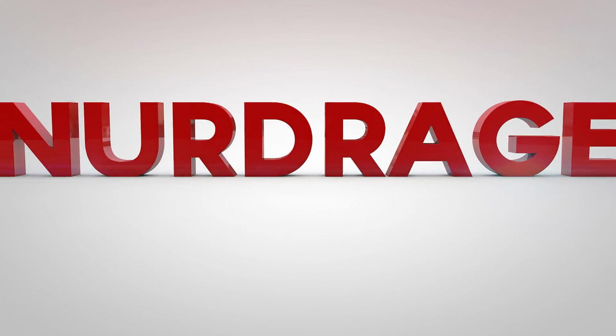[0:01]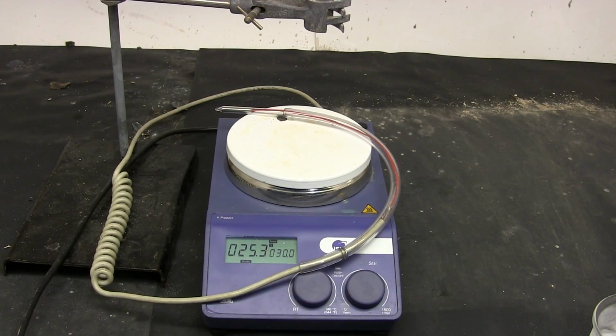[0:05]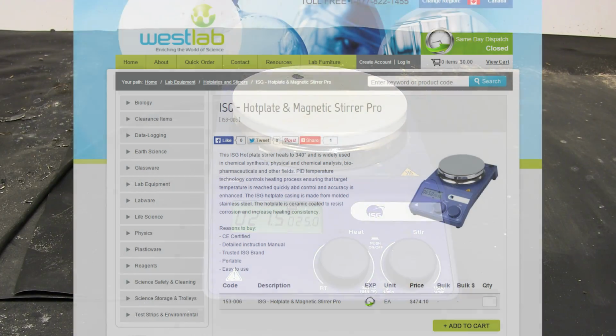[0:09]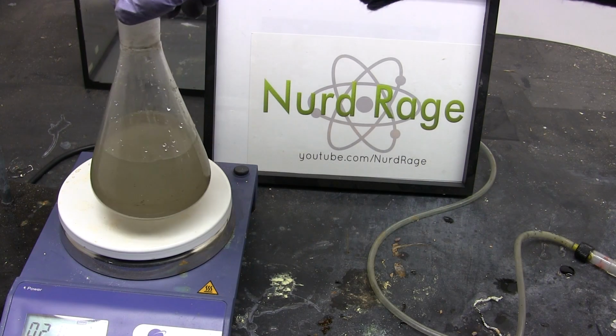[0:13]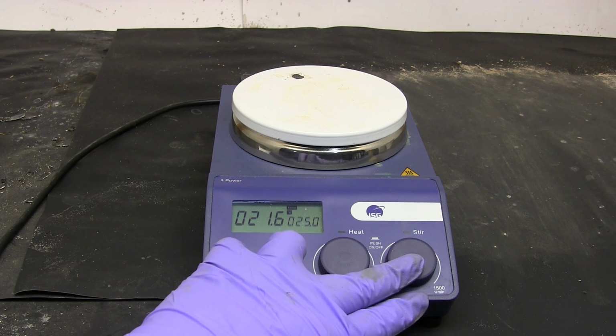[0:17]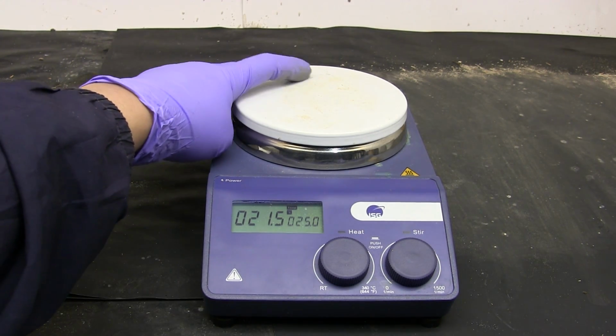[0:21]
In this video we're going to make a thermometer for this hotplate. Recently I purchased this hotplate stirrer from a company called Westlab here in Canada. You've seen me use this so far in a few of my latest videos. For the most part the hotplate stirrer works fine and reliably, although the ceramic coating on the heating element is rather easy to chip.
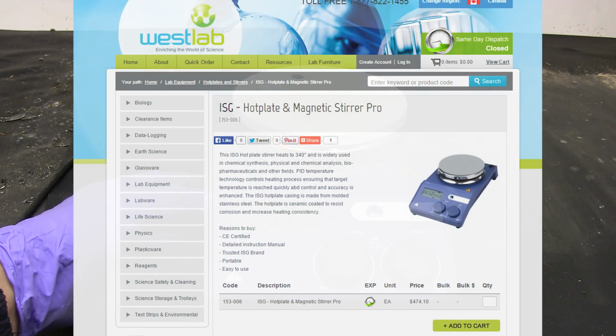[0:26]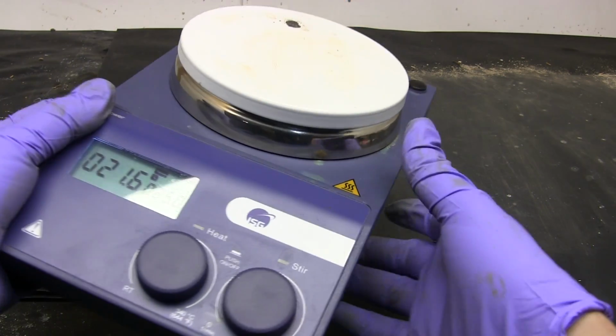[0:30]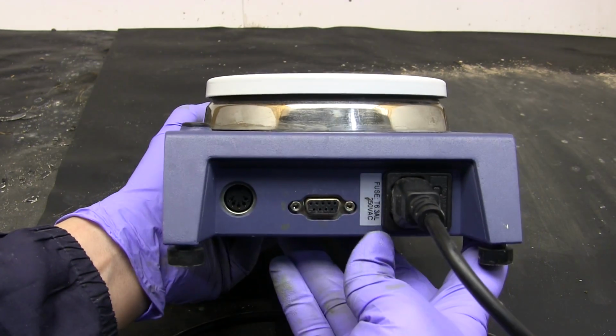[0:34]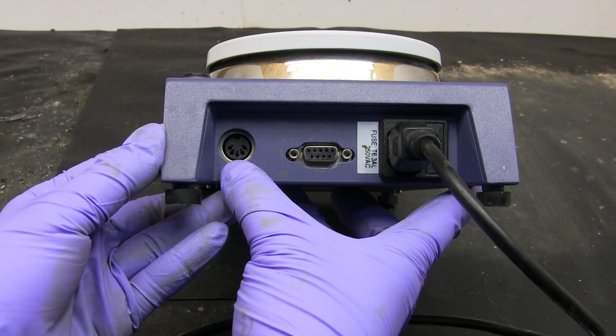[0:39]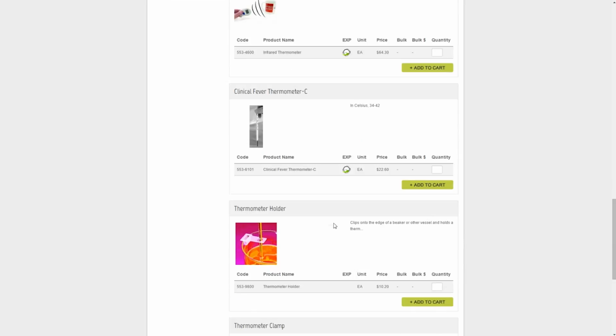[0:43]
What really pisses me off about my purchase though is that the website implies it has a thermometer probe, but I never received one. When I emailed the seller about this they never responded. The hotplate clearly has the required port for a thermometer probe but that's no good if the probe isn't provided. The website doesn't even list the probe for sale. At this point I decided to go to the original manufacturer.
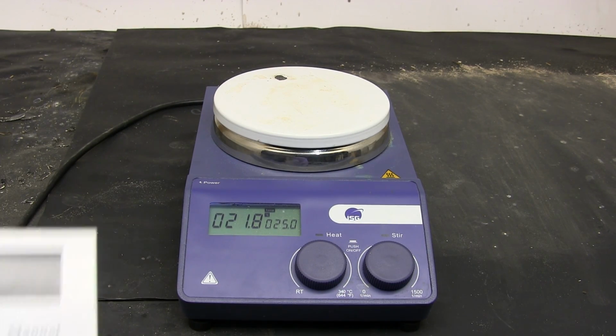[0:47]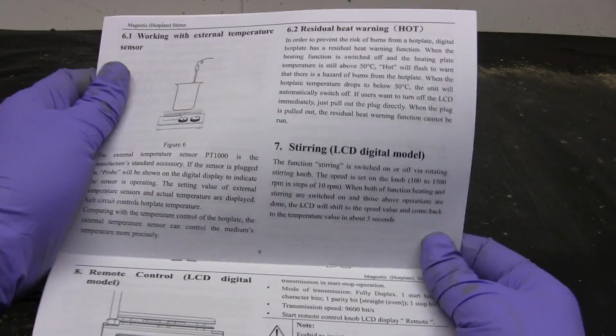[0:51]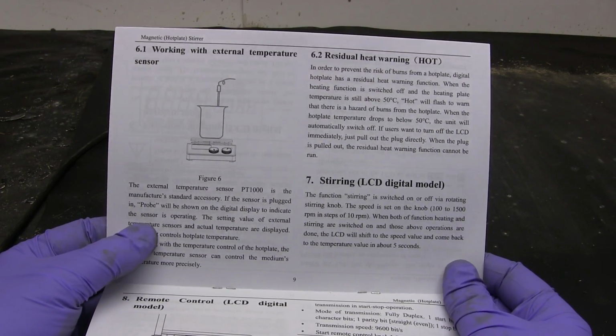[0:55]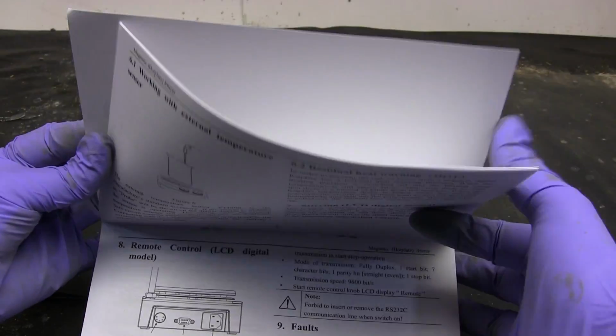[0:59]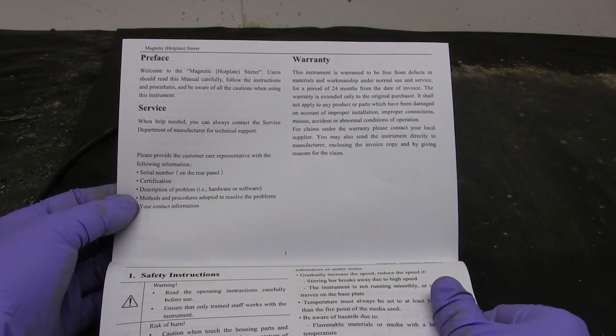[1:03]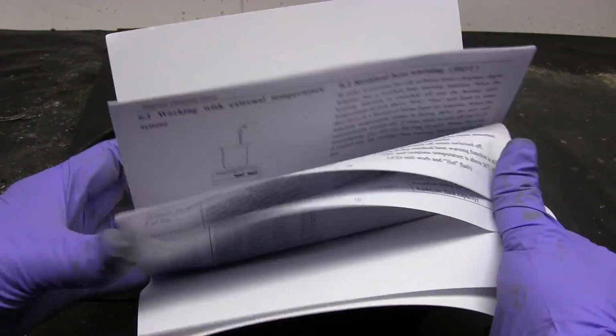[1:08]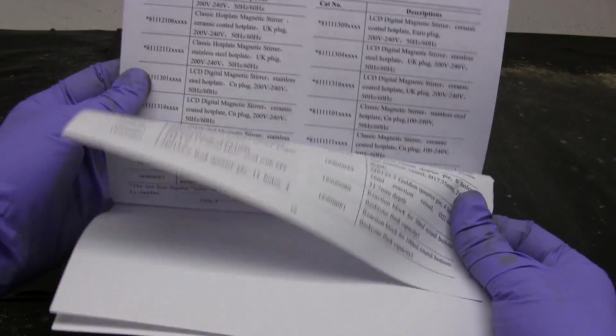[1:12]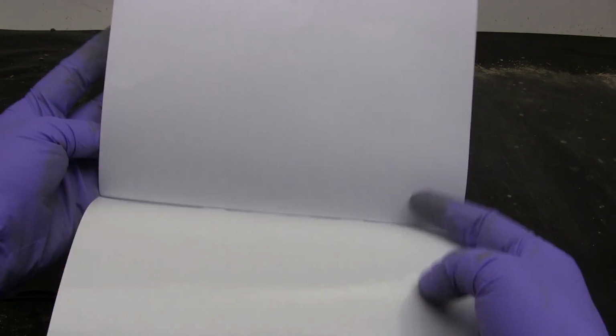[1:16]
First place to look for them is the operating manual. I was no better off as it seems like the manual was not written by a person who speaks English as a primary language, so the manufacturer was likely foreign. But the worst part was that the manual did not specify any manufacturer anywhere. Almost all equipment has the manufacturer listed somewhere, but this one doesn't. It has model numbers but without stating which manufacturer uses them those numbers are worthless. I'm starting to think I bought some sort of imitation knockoff.
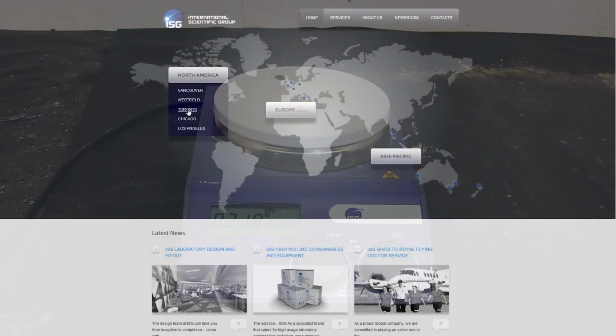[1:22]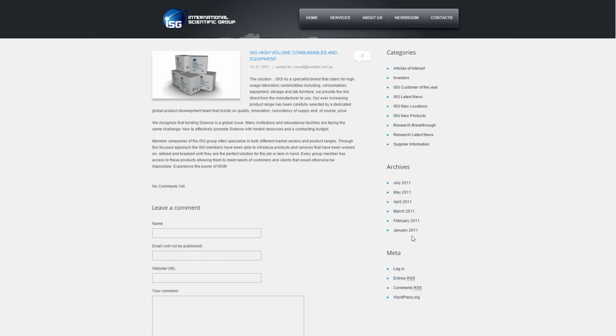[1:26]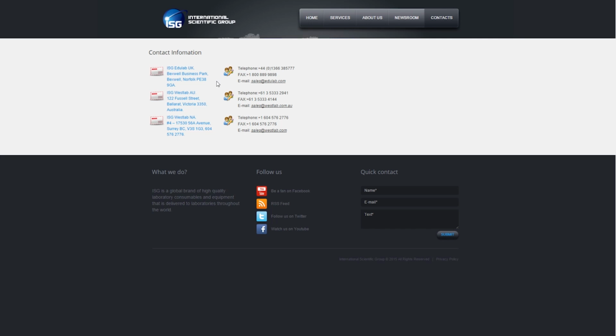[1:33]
The only clue I had was the logo here, ISG. Looking online the closest thing I could find was the International Scientific Group. At least the logo matches. But half the website doesn't work and the other half looks like it hasn't been updated since 2011. The contact information listed for Canada is actually Westlab, where I bought the hotplate from. Since I already got ignored by them it looks like I reached a dead end.
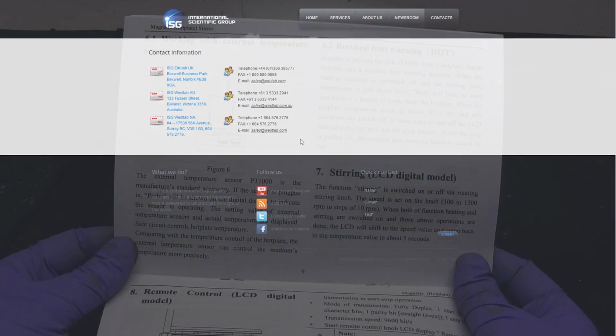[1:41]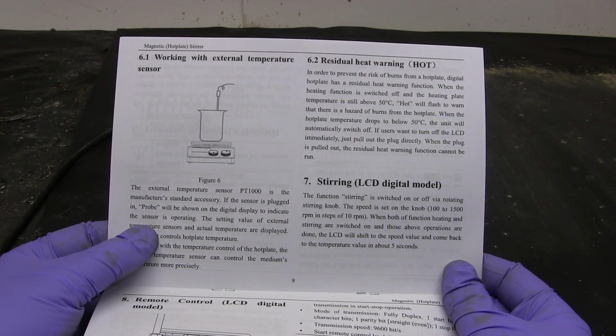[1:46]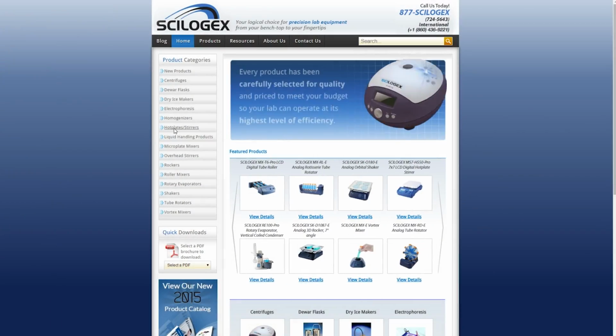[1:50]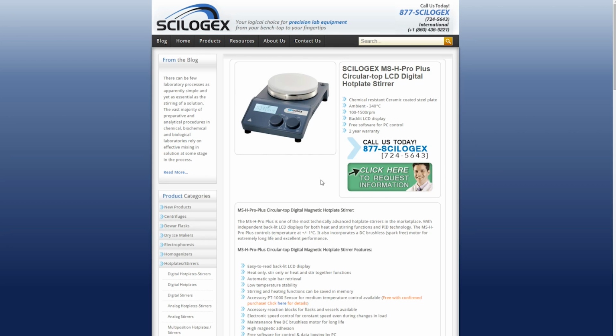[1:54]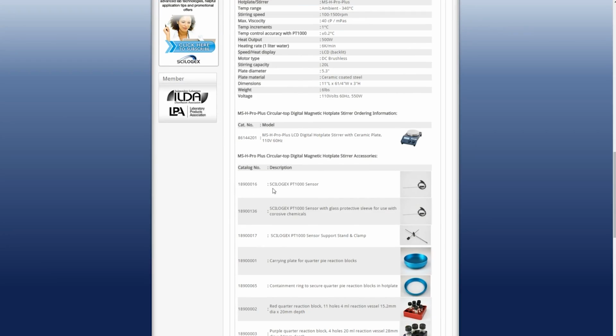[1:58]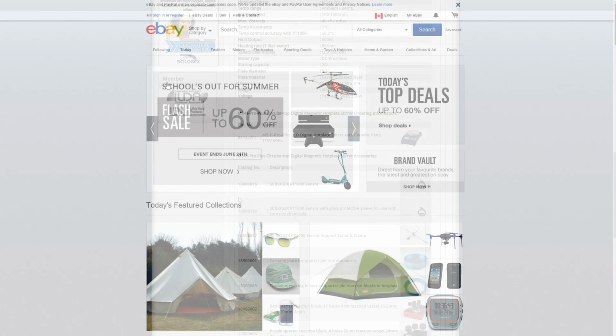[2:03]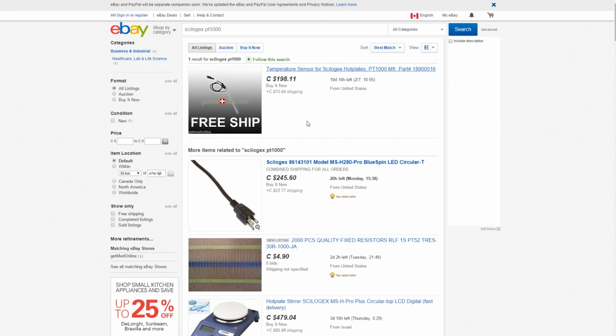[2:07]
But since the operating manual makes me think it's a knockoff, maybe I can find a similar product with the same design and specifications. Continuing my research I was eventually led to a company called Scilogex that sells an almost identical hotplate with just the logo being different. Finally I had a way of obtaining the thermometer probe even if I had to buy it from a different company. Now the price wasn't listed so I checked into eBay as the prices usually fall to market. And here it is. Around 161 American dollars.
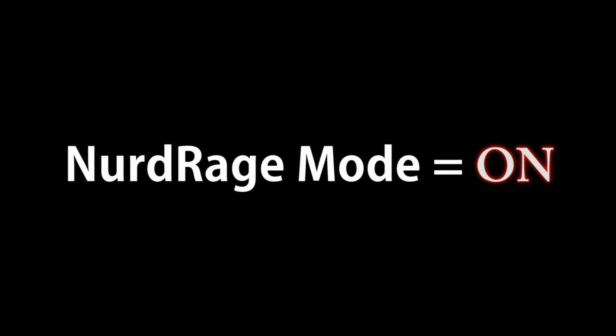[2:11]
F**k that. I'm not paying 161 American dollars for a f**king piece of vapor deposit platinum on ceramic. I will f**king make one. You think I got a PhD in chemistry just to bend over and take it in the a** of lab equipment? Little f**kers.
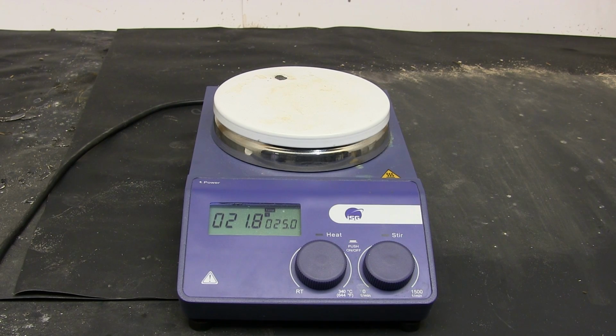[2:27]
Ok ok, sorry about that outburst. Ok, so how do we go about making our own thermometer probe?
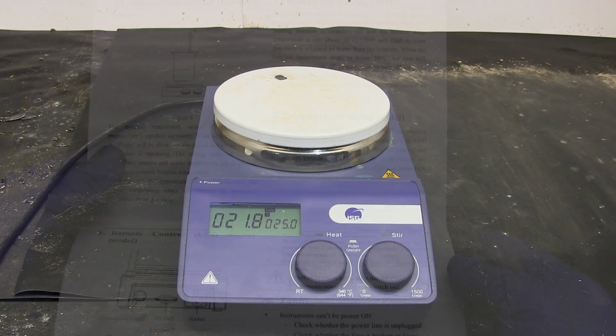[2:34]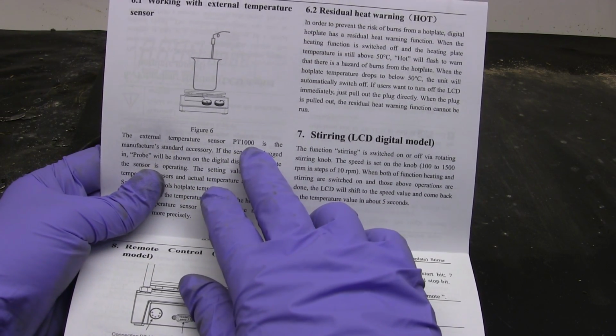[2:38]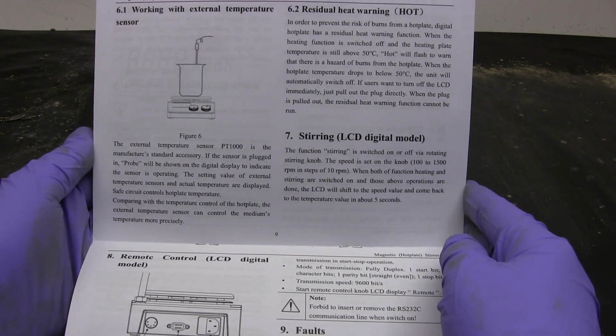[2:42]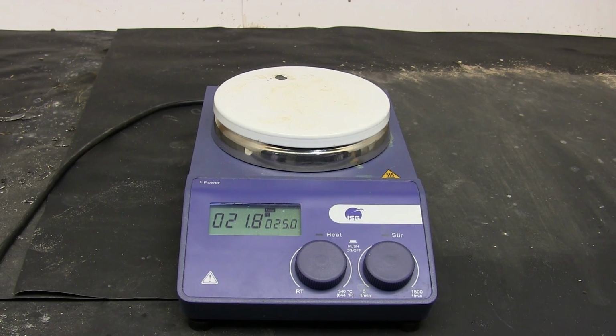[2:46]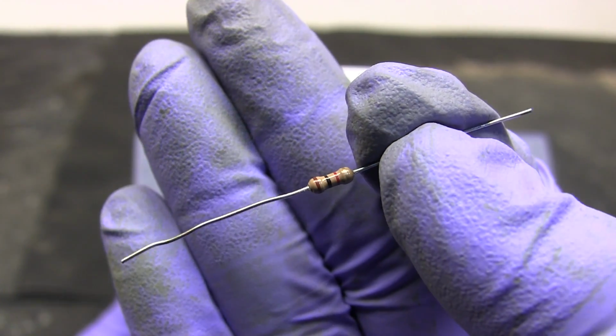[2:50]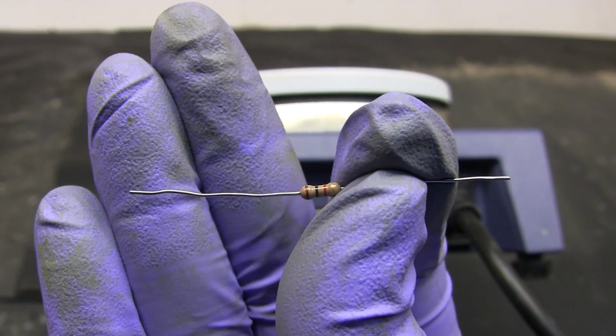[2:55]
Well first we need to know what type of element it uses. A big hint is right in the manual. It calls it a PT1000 sensor element. Now this just might be a coincidence but PT1000 could mean it uses a platinum resistance element with a resistance of 1000 ohms at 0 Celsius. To be certain I'm going to test it by sticking this 1000 ohm resistor into the thermometer probe port. This will simulate the connection of a PT1000 element as the circuitry can't tell the difference.
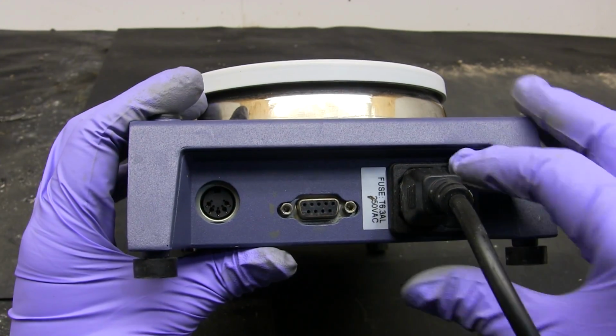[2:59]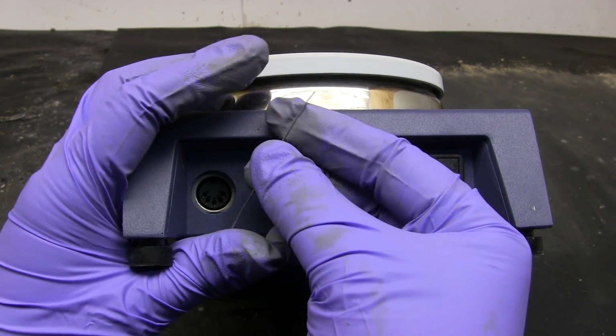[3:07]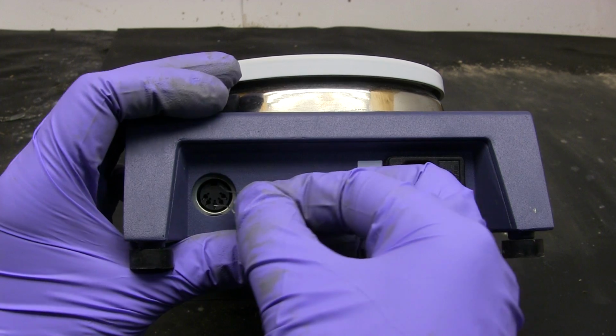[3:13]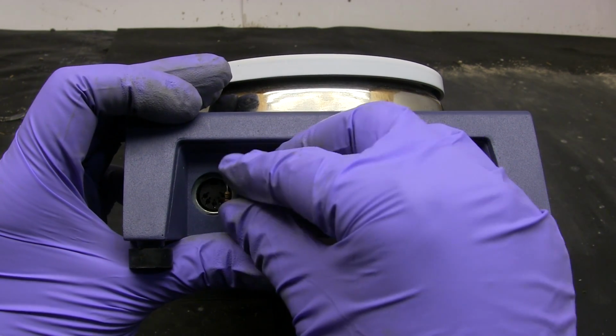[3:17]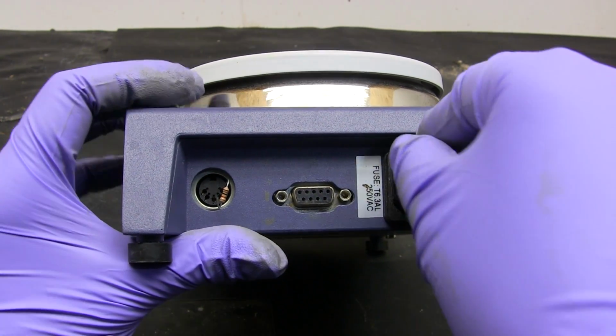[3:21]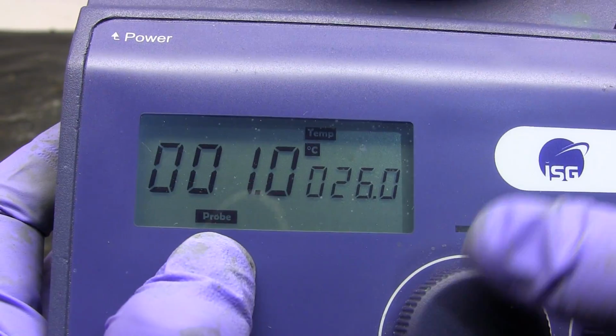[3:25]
Oh yeah, before doing any sort of electrical testing, unplug the equipment. Sticking things into a live socket is usually a bad idea. Now there are five holes here so there are ten ways to stick in a two pin component. Fifteen if you include the outer grounding sheath. I'll just have to try them all and hope I eventually hit on the right one. First I'm going to try the two rightmost pins. Ok, I'm going to put the plug back in and check it out. Well what do you know, I got lucky and it's working.
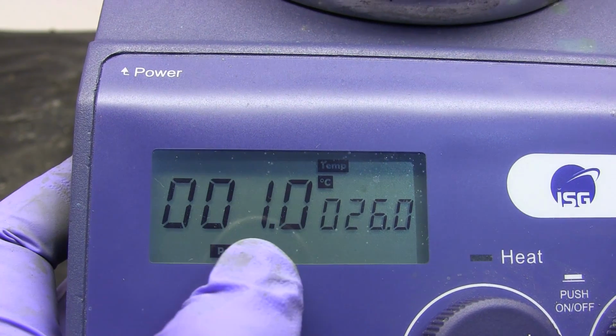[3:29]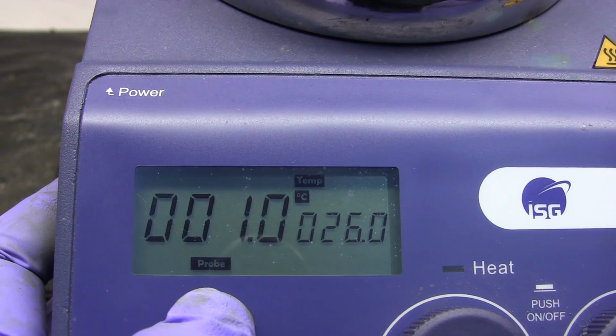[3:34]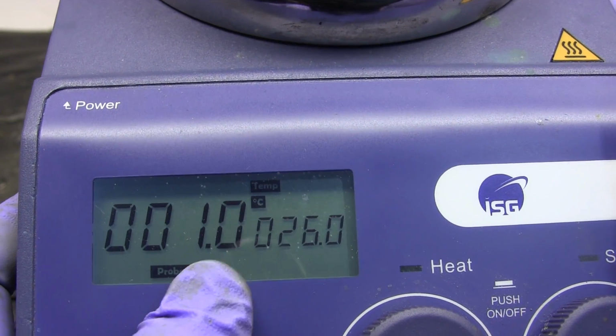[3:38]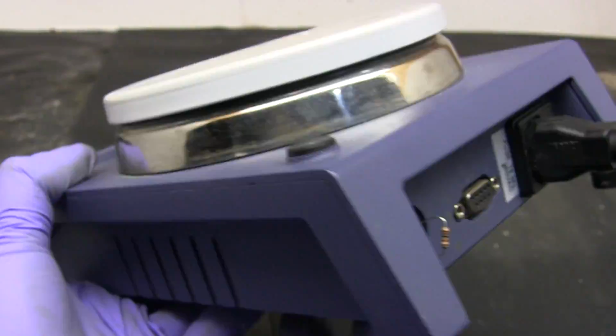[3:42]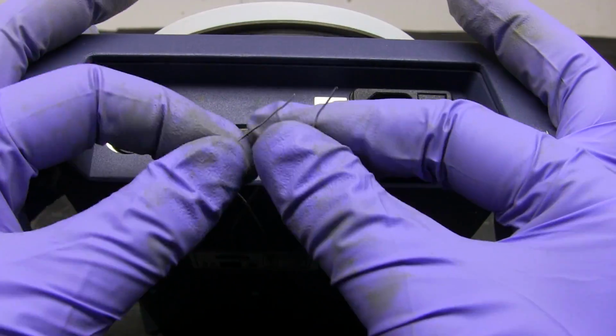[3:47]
The hotplate registers the probe as connected by showing this display. And it's reading the temperature as one degree Celsius. This is consistent with the resistance of a PT1000 element since our fake resistor at 1000 ohms should register 0 Celsius. To be certain I'm going to connect another 1000 ohm resistor in series to get us 2000 ohms.
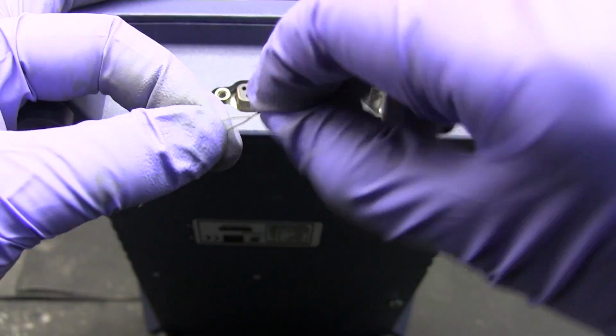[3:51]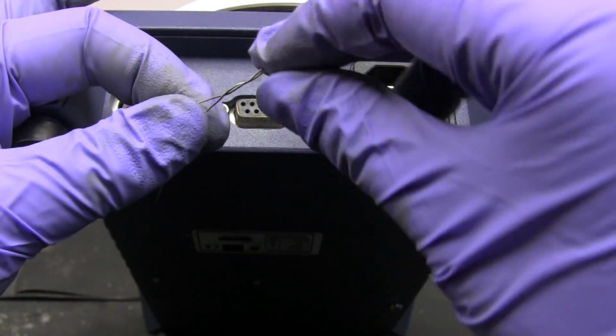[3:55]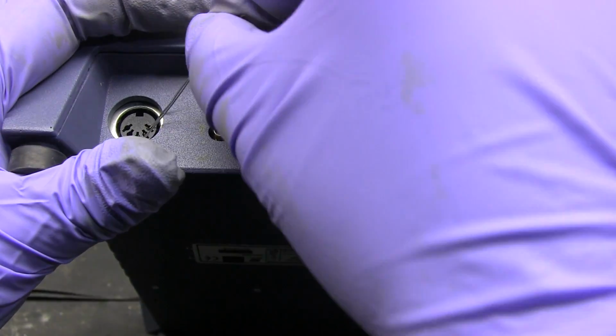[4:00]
Now for those of you wondering, the serial port in the middle of the hotplate is for reading off the temperature with a computer. Useful for automated lab equipment and experiments. Personally I don't need such a feature, but who knows what will happen in the future.
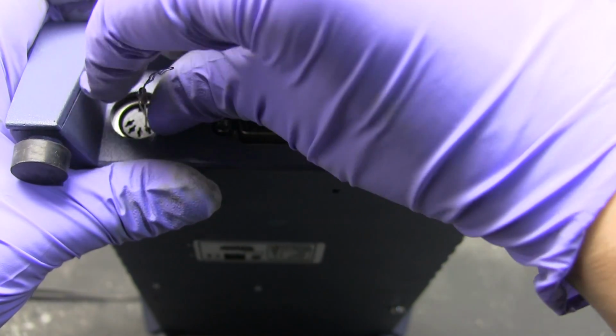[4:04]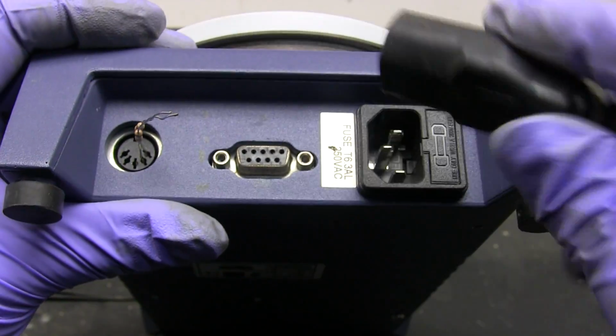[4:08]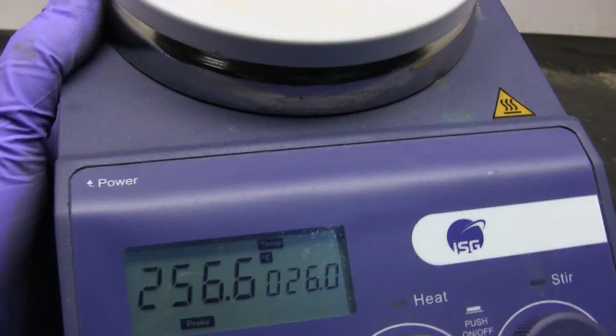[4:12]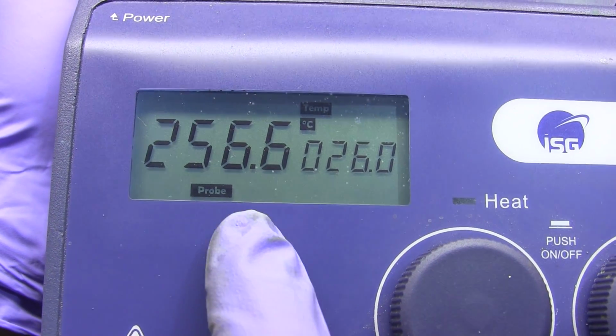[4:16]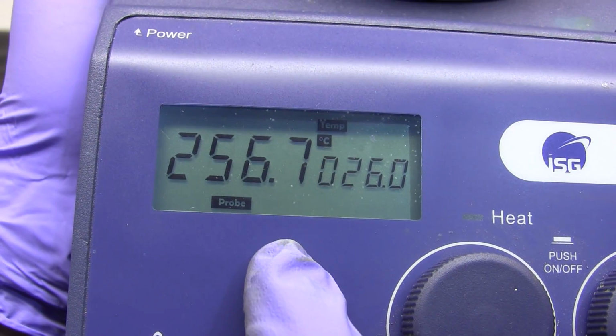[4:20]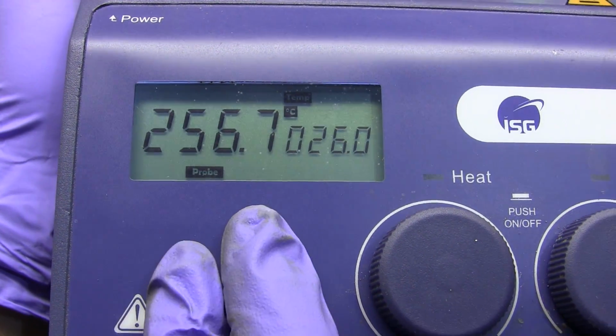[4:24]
Anyway, back to the resistors. A standardized PT1000 sensor registering 2000 ohms means it's at a temperature of around 259 degrees Celsius. And that's where it's eased at. We're a bit off, but I'll attribute this to the resistors not being perfectly 1000 ohms each. This is still nonetheless consistent with the response of an actual PT1000 sensor element.
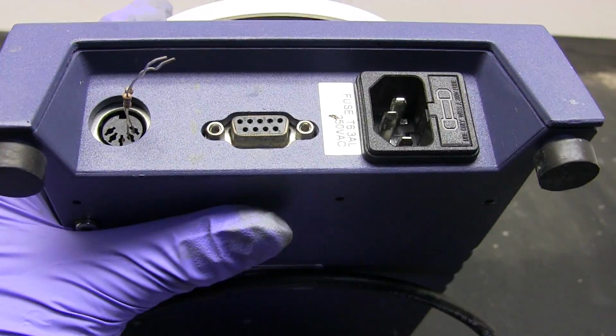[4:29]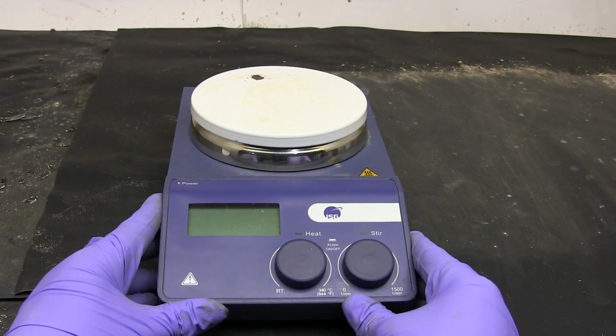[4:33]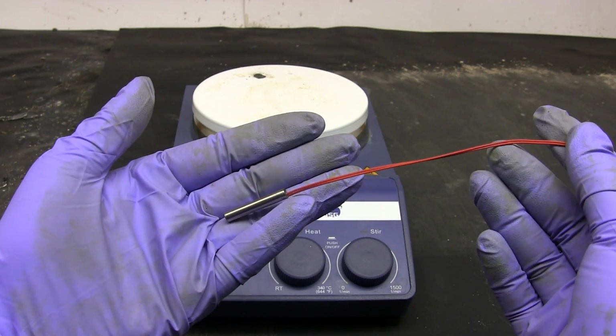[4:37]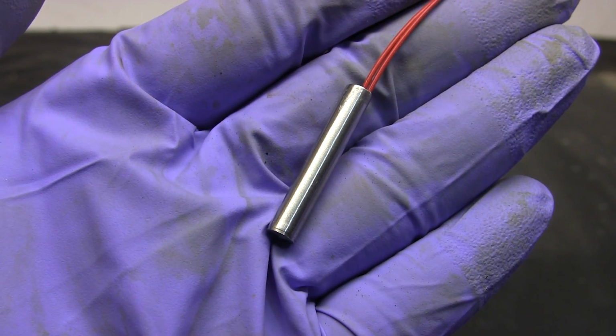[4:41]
Now that we know this works, we can get our parts and build a proper PT1000 thermometer and reasonably expect it to work. The first thing to buy is a sensor element. I got this PT1000 cartridge type element off eBay for about $10. You can also buy the bare element by itself, but I wanted the cartridge for more durability.
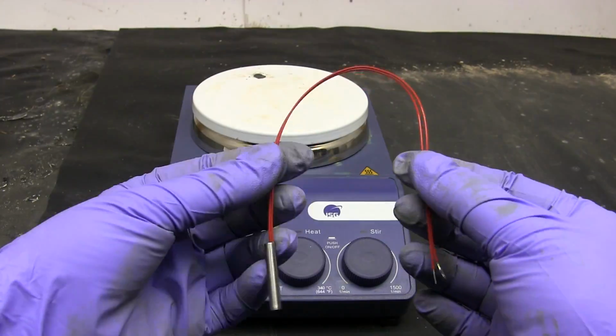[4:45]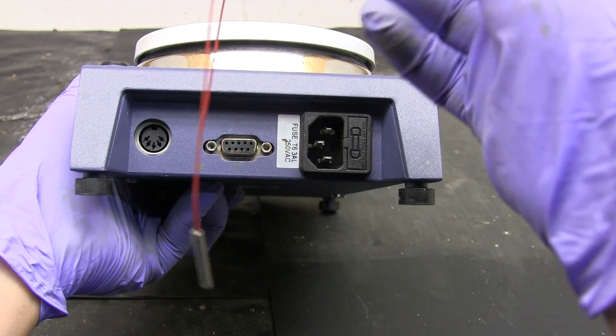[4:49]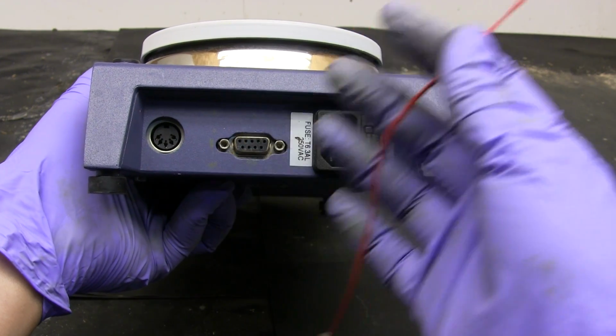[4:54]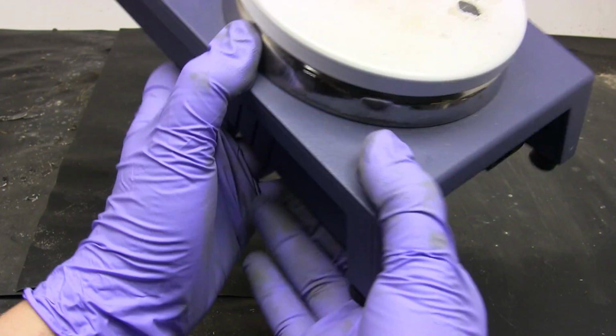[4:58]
Now you can try inserting the leads into the connector, but that's pretty unstable and the wires are too short to be useful. So let's get ourselves a proper connector. It looks like this is a standard DIN5 connector. Let me see if I can go find one.
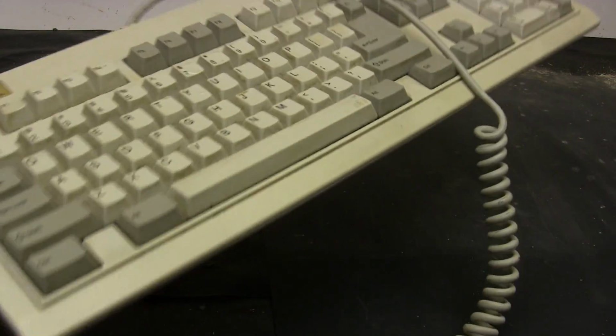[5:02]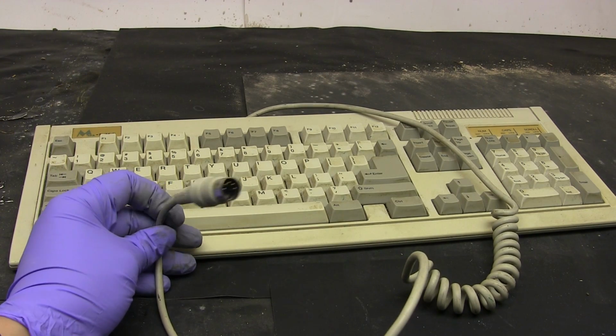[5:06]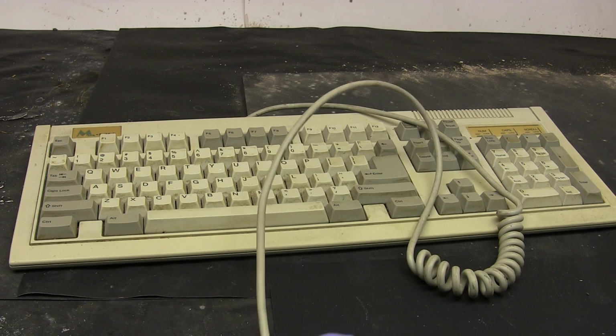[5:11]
It just so happens I kept my old keyboard from one of my computers from 20 years ago. Keyboards this old use DIN5 connectors. Wow, 20 years ago. All of a sudden I feel really old and have the overwhelming urge to sit in a rocking chair on my front porch and yell at kids to get off my lawn.
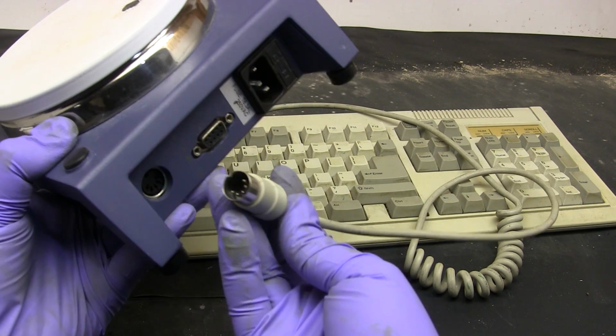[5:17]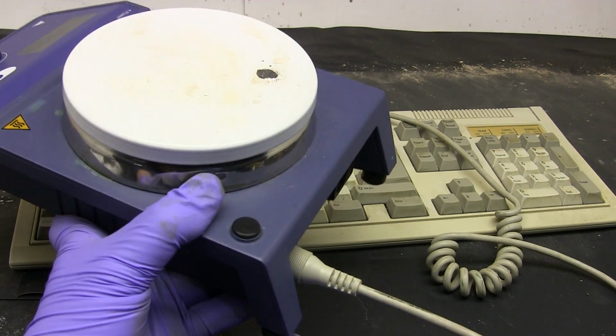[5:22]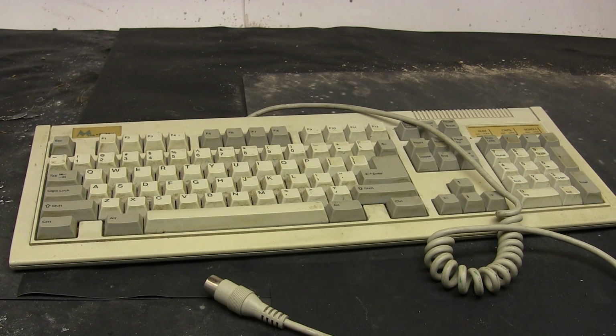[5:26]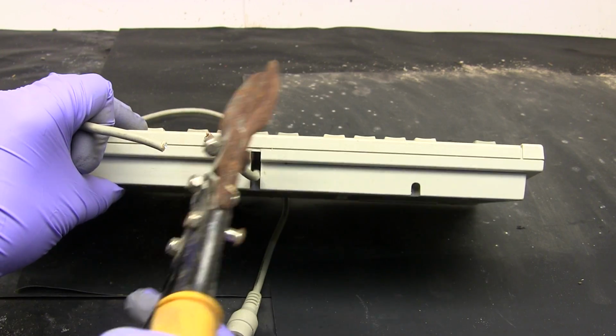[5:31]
Anyway, let's first check if this connector really does fit. Looks like it works, so this keyboard will finally have some use 20 years later as an organ donor for my thermometer probe. Now we just cut the cord. And we have our connector and cord ready.
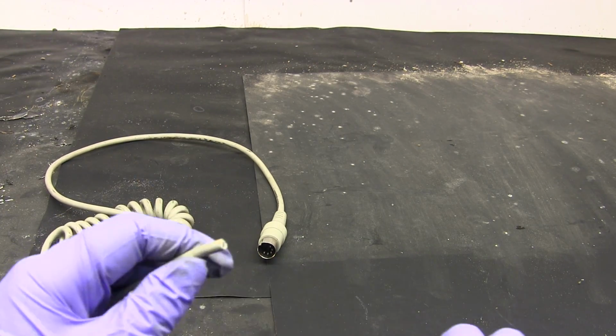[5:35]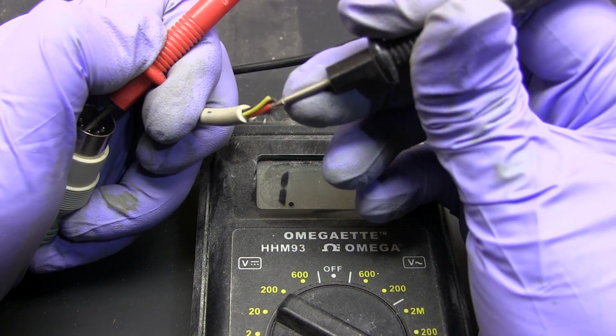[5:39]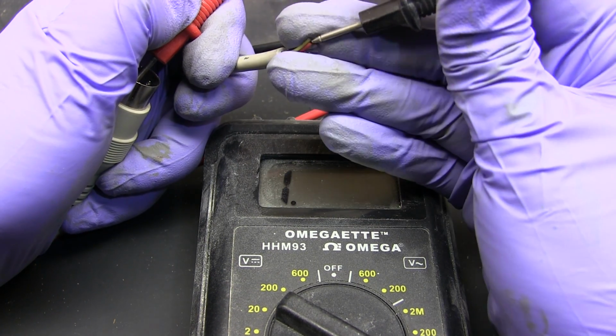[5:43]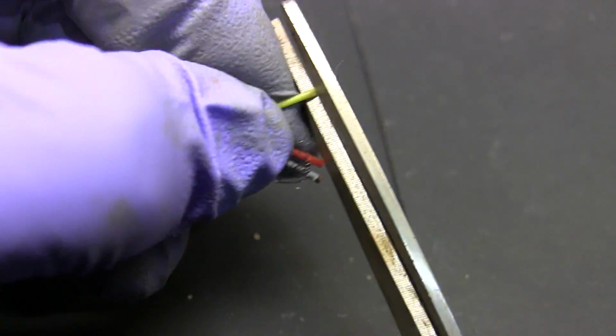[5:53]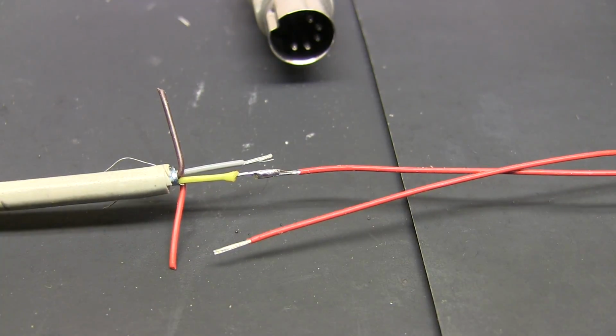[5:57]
Using a pair of scissors we strip off the outer sheath. Now using an ohmmeter we determine which of these wires correspond to the two leftmost pins of the connector. Remember that since this is the male side of the connector the pins are flipped, so what was on the right is now on the left. Looks like the gray and yellow wires are the wires we want. We now strip off the insulation of those wires and then we solder the wires to the two leads from the sensor element.
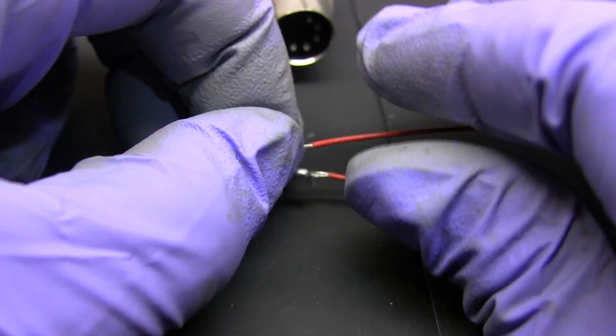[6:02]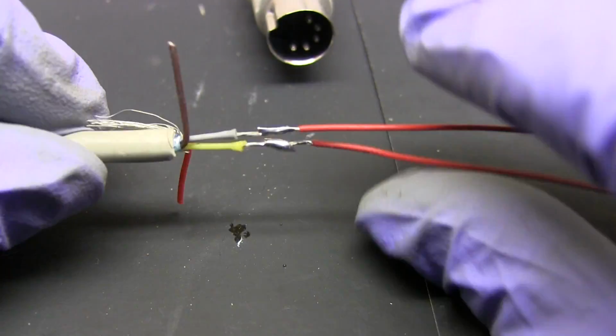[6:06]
At this point I must admit I am just a PhD chemist and not a much higher paid and skilled electrical engineer. You actual electrical engineers are probably laughing your asses off right now at my bad soldering technique.
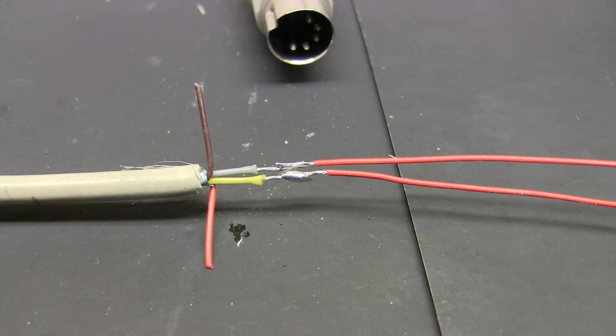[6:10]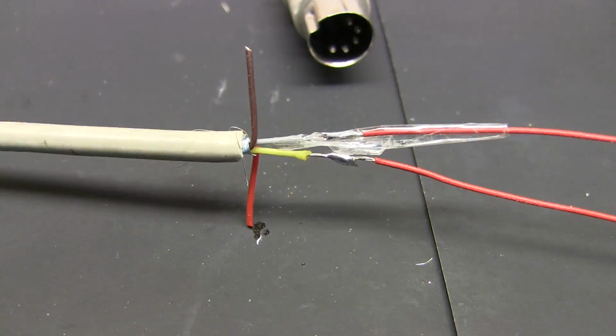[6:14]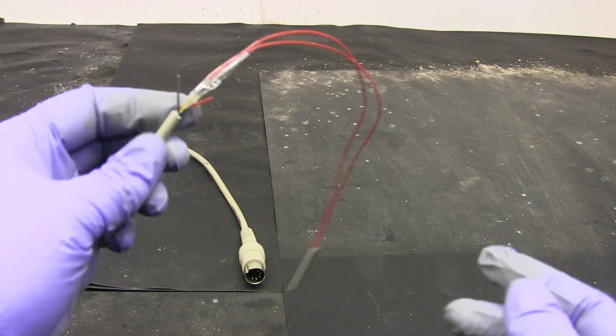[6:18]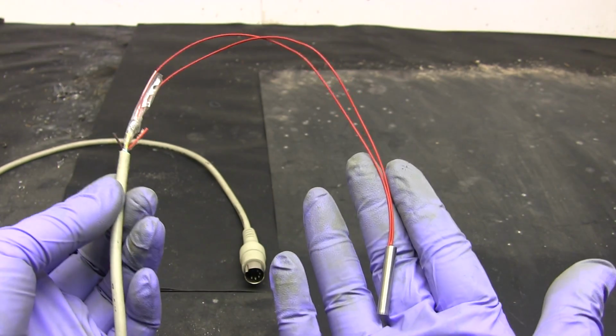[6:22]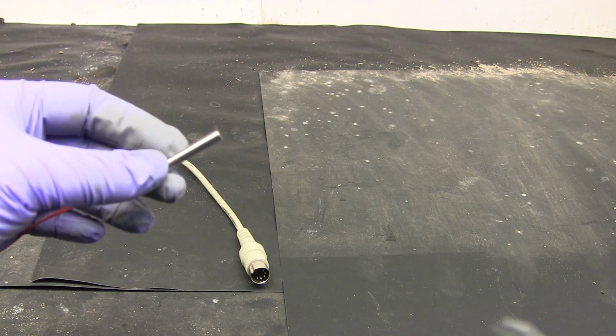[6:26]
Anyway, once we're done soldering we insulate the leads from each other with some tape. We're almost done. Here is the sensor with the cord and the connector attached. While we could use it as is, the cartridge would be destroyed by acid pretty quickly, so we'll use this pipette to protect it and create a glass encapsulated thermometer probe.
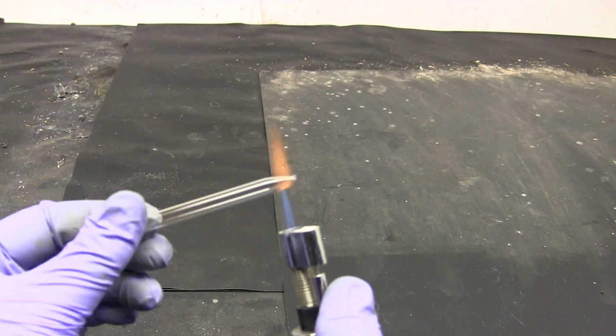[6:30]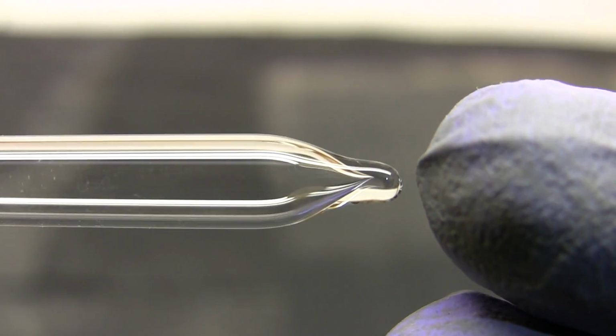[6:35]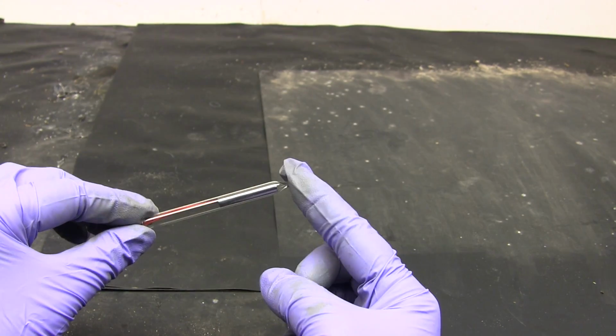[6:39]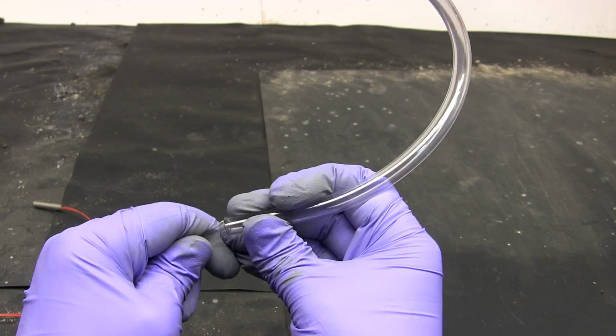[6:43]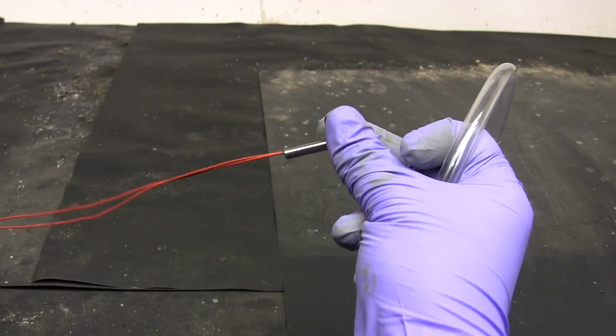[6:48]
First we close one end using a torch. Make sure the seal is complete and leak free before letting it cool. Now while we can use it like this, there is still the danger that I might drop the probe too far and the chemicals can still get in. So I'm going to use a quarter inch vinyl tube to connect the glass tube as well as to sheath and protect the wires.
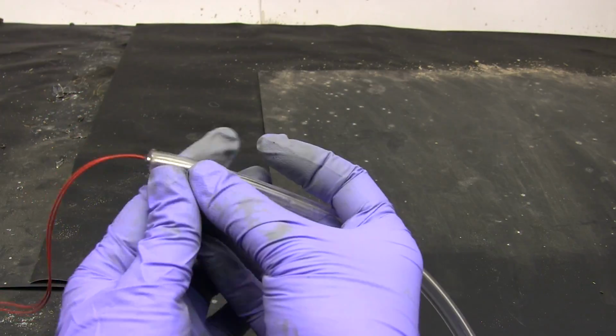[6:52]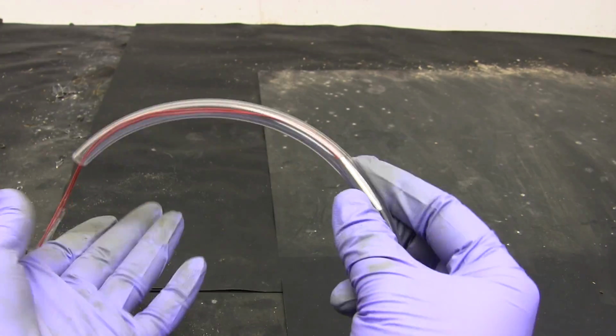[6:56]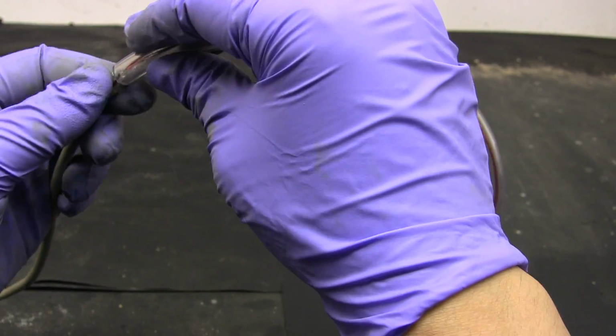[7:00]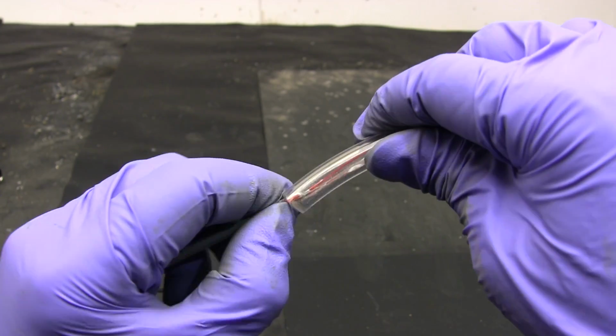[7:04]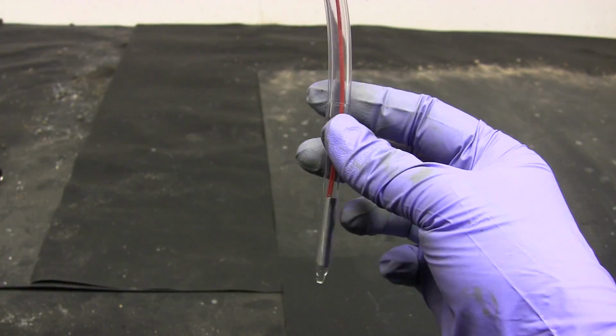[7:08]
You can also use a much longer glass tube if you happen to have one, although I still recommend using some vinyl tubing at the top so you can seal the cord. I'm not worried about melting the plastic as I only intend to use this for temperatures below that. But if you intend to use the full range then you'll definitely have to obtain a longer glass tube. Be sure to thread the cartridge all the way to the bottom.
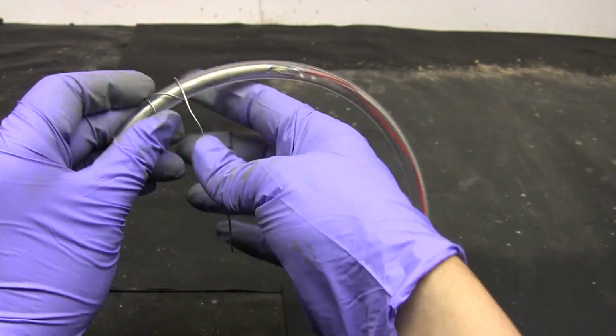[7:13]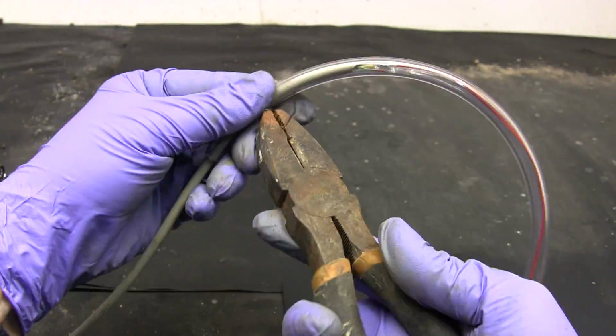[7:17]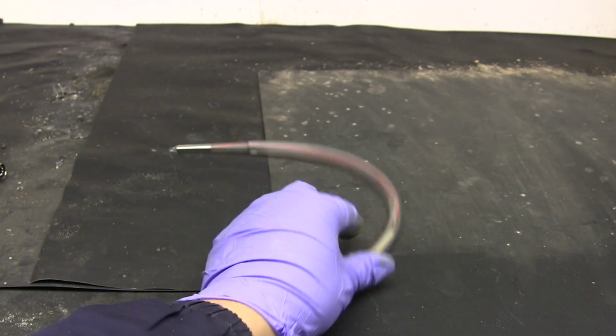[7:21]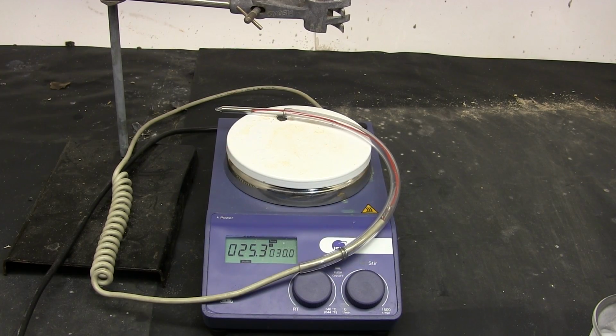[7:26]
Now we seal the cord with some iron wire. You can also use a hose clamp. With enough twisting we can clamp down on the tubing and seal it against the cord. Now there is no way for chemicals to get in and corrode the connections. And there we have it, it is connected to the hot plate's stirrer and correctly measuring the temperature of the room.
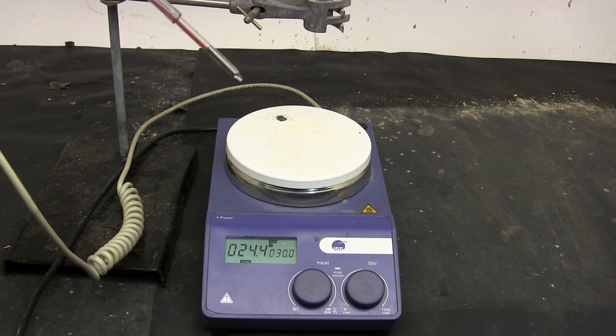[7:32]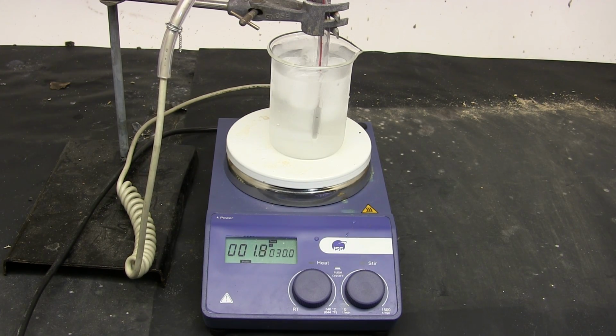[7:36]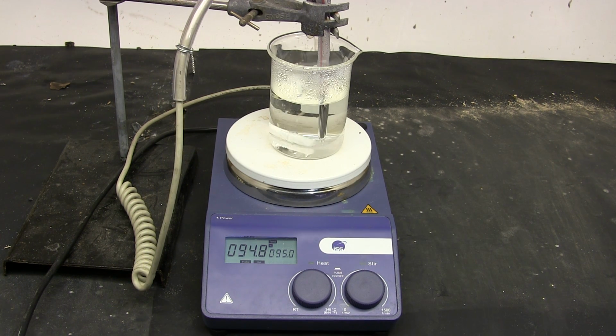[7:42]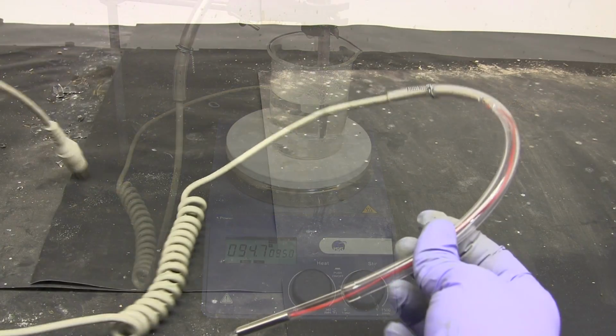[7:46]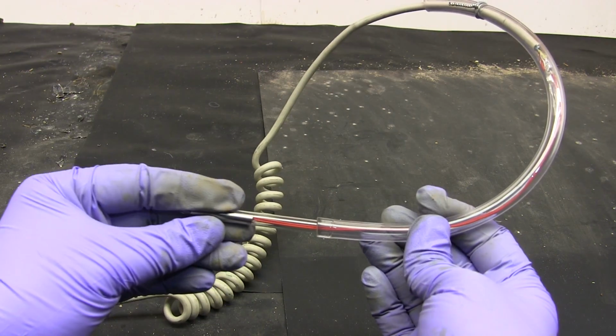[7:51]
Now we put it in some ice water. Looks like the circuitry can't measure any temperature below one degree Celsius, but this is the fault of the circuitry and not the probe. Here I am using the temperature control function of the hot plate to maintain water at a constant 95 degrees Celsius. It looks like we were successful. For about twenty dollars worth of parts we made a thermometer probe and avoided paying a huge amount for the actual one.